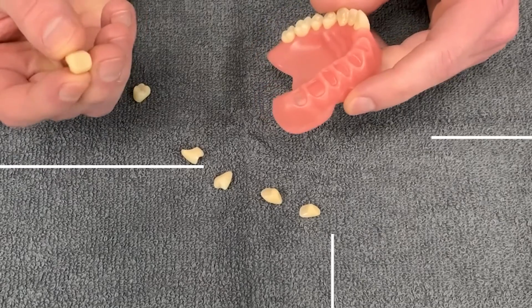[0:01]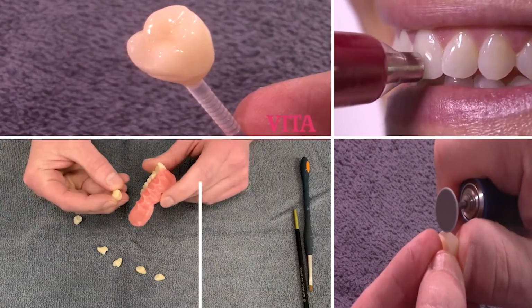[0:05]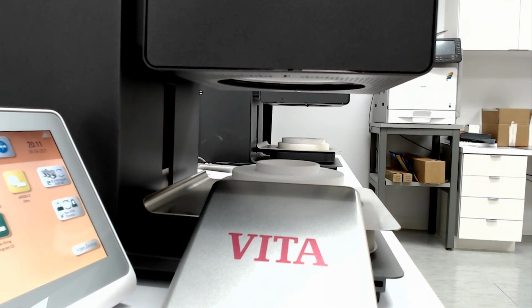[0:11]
Today we're going to be talking about calibrating the Zyrcomat sintering furnace. Now this is for the VITA ZYRCOMAT 6000 MS or the VITA ZYRCOMAT 6100 MS.
I get phone calls from time to time of people asking me, hey, Paul, my unit is getting a little older. I want to check out, make sure that the calibration is okay. Or, hey, Paul, I came in today and I ran a cycle and my crown just doesn't look quite right. How do I check the temperature on my furnace?
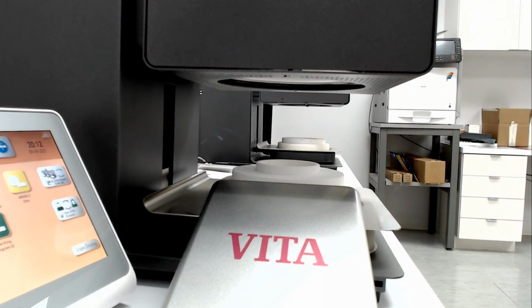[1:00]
For the Zyrcomat sintering furnaces, the only way to check the temperature and to calibrate it is to use our VITA Calibration Kit and run a zirconia sintering ring.
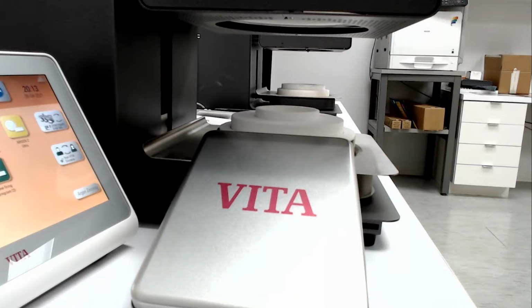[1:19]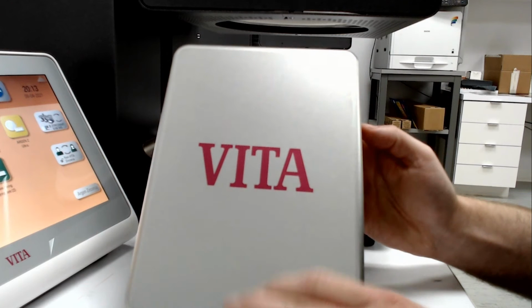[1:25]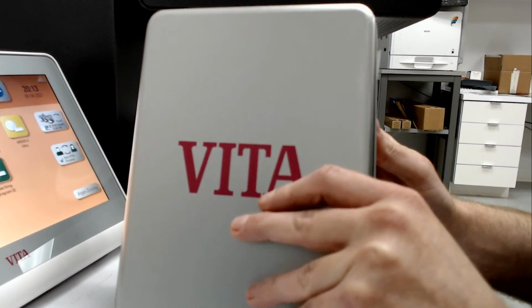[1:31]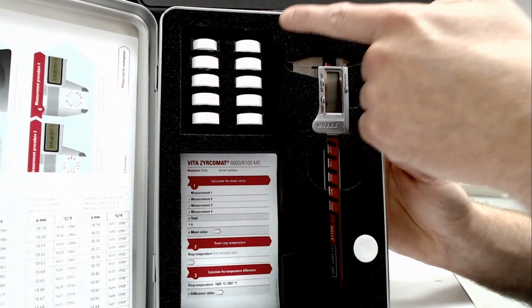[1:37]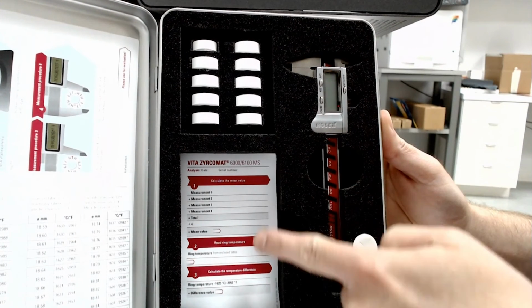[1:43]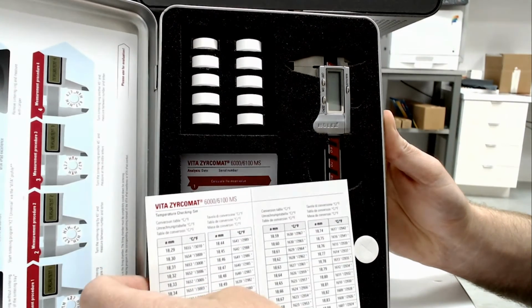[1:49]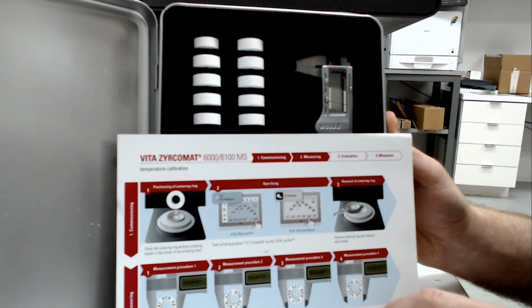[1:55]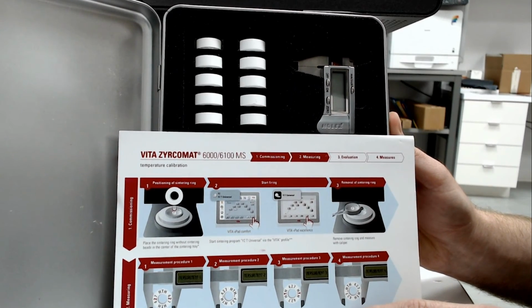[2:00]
This is what the Calibration Kit looks like. It comes in this nice silver box, and included in this box is the paperwork, the directions. It comes with 10 sintering rings. It comes with a digital caliper, a sheet to track your measurements, a temperature chart, and instructions on how to calibrate your furnace. I'm going to walk you through this to show you what it looks like.
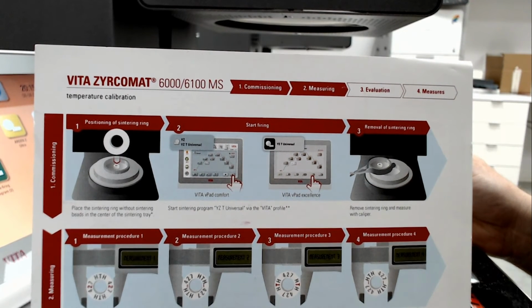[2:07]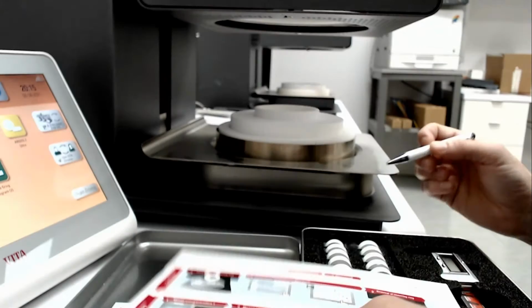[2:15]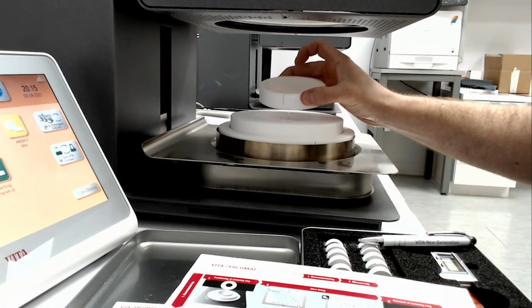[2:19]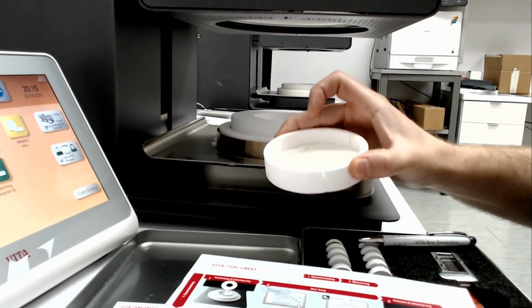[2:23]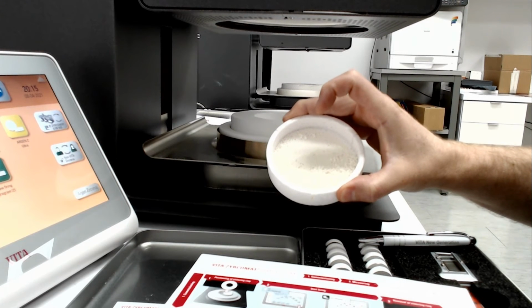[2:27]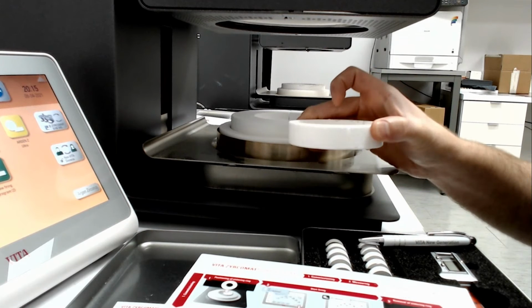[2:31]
Okay, to start, we want to put a single one of those calibration rings in the center of our tray, but without the beads in it. So let me show you what that looks like. Typically, in our crucible here, we would have the zirconia beads. Now, we don't want to throw these away. We just want to transfer them out of here into another container.
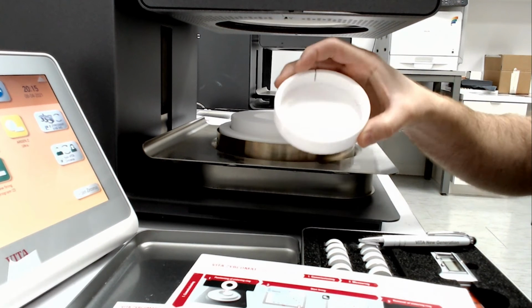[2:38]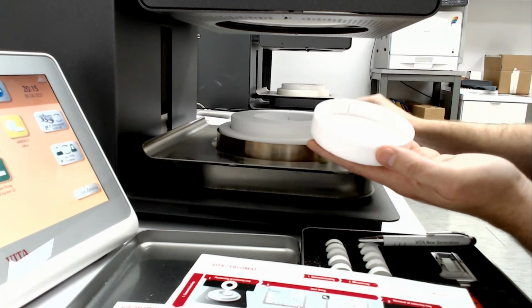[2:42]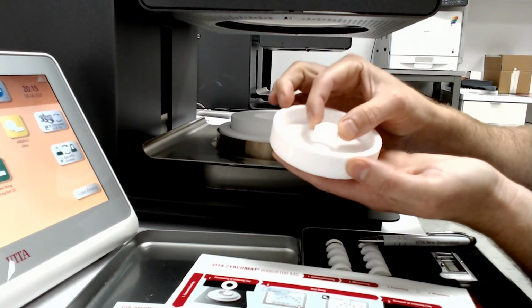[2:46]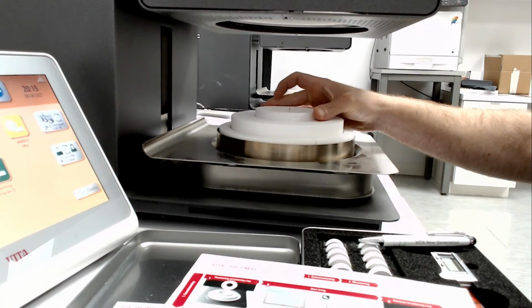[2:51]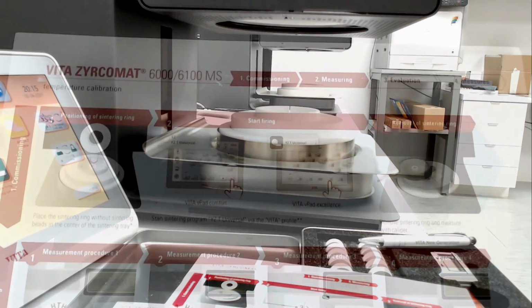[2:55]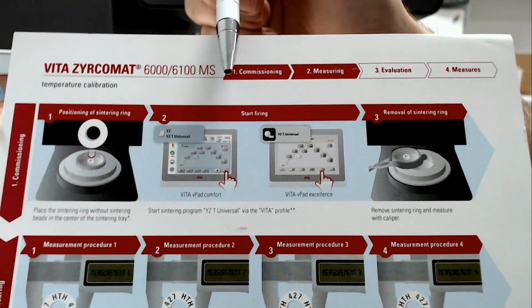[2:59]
I happen to have another container without the beads in it. So I want to place a single ring in the center and put it into my sintering unit. The second step is to start firing.
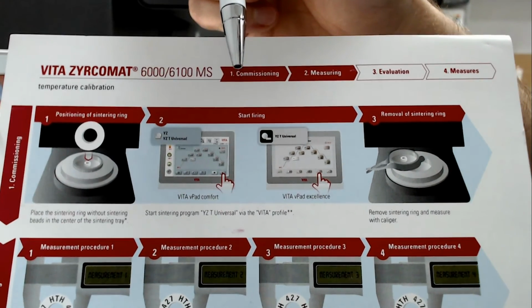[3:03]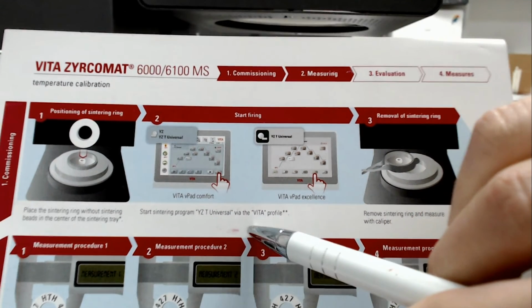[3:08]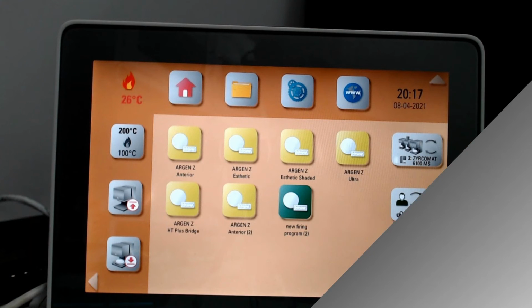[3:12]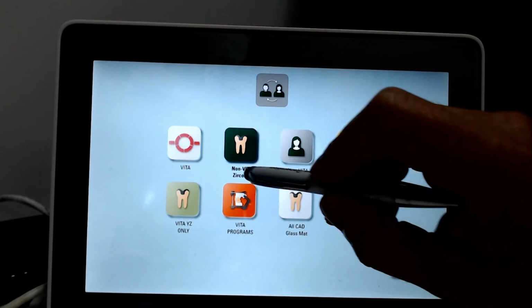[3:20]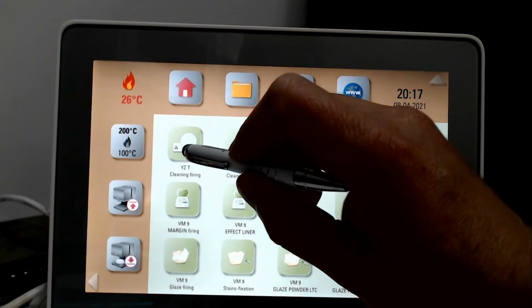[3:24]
And the firing program we want to use is the YZT Universal. So let me show you how to find that on your V-pad. On your V-pad, the first thing you want to do is change the user profile here to the VITA profile.
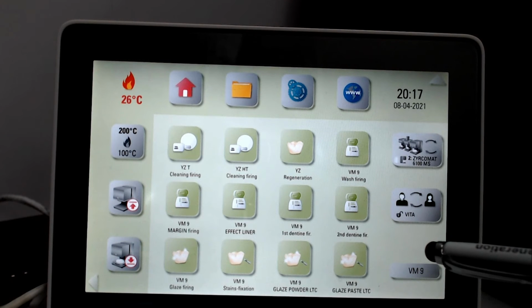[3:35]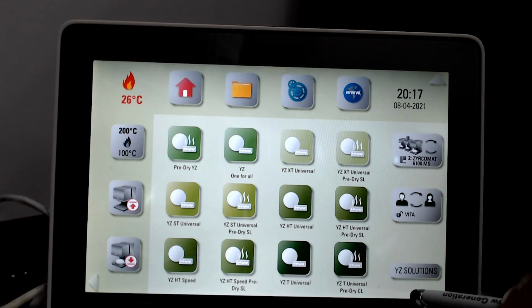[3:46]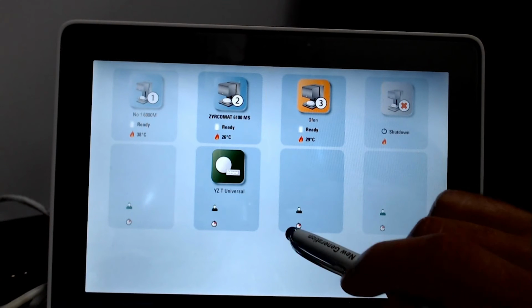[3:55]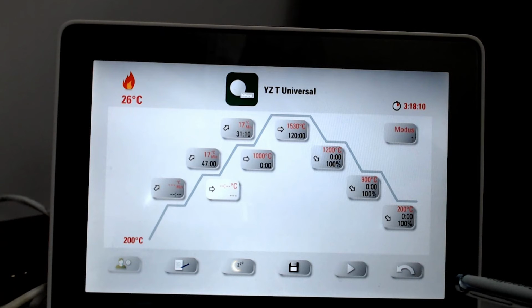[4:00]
Now on the home page for the VITA profile, we want to find our sintering programs. And the quickest way to do that is to go down here, tap this, and then we can scroll up until we find our YZ solutions. Under YZ solutions, we're going to find our YZT Universal. And this is the program that we're going to use to calibrate or run that sintering ring. Now you can see it's about a 3-hour cycle plus cool down, so make sure that you give yourself enough time.
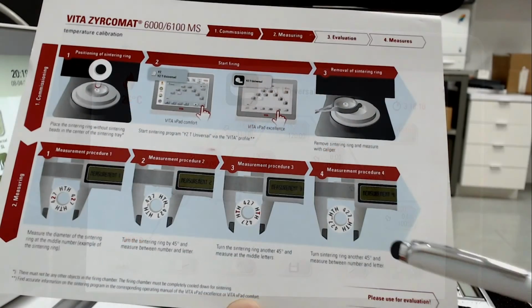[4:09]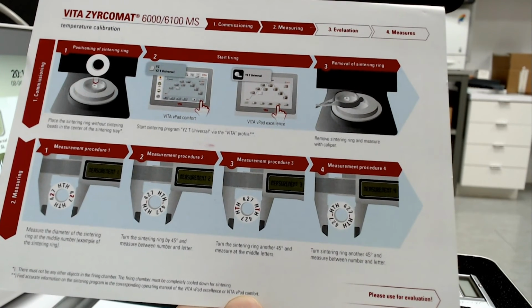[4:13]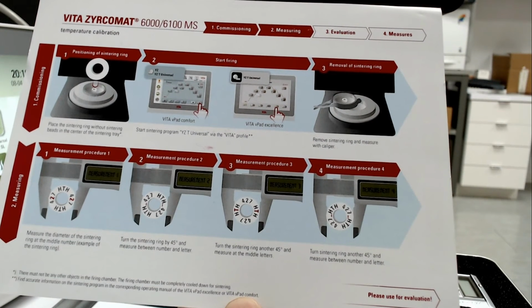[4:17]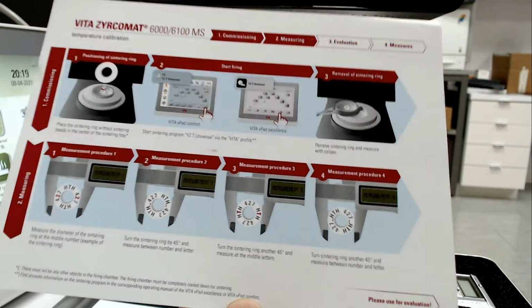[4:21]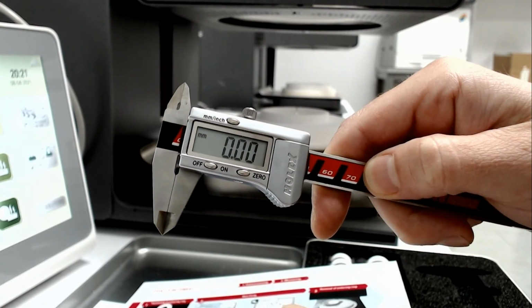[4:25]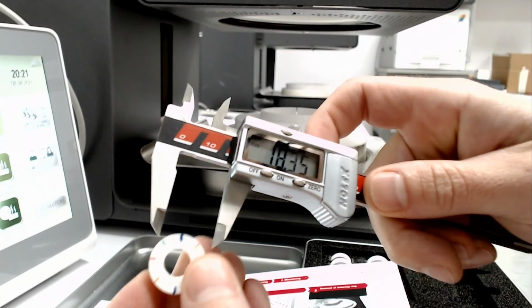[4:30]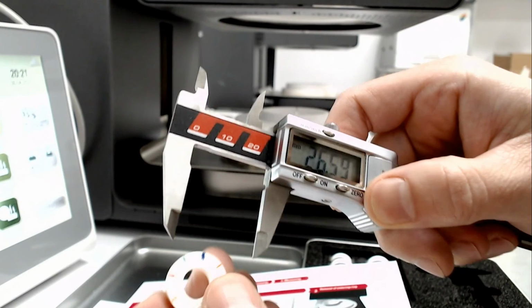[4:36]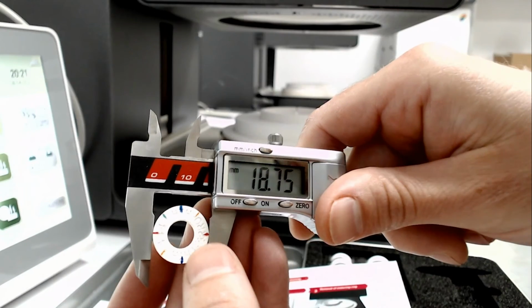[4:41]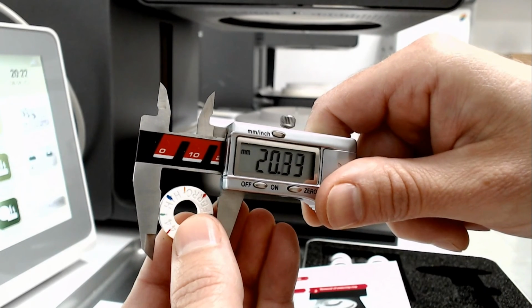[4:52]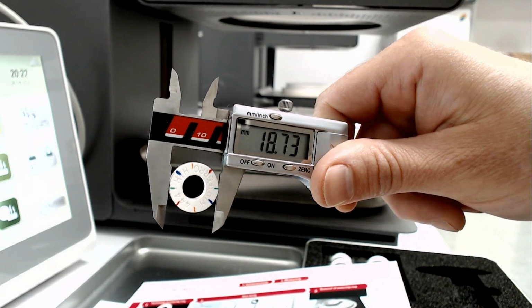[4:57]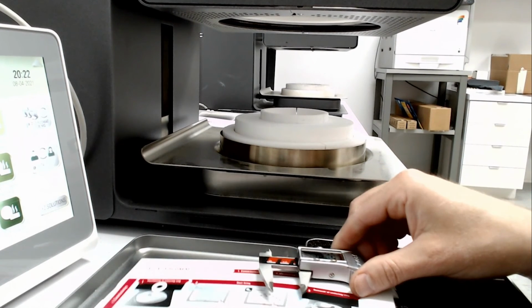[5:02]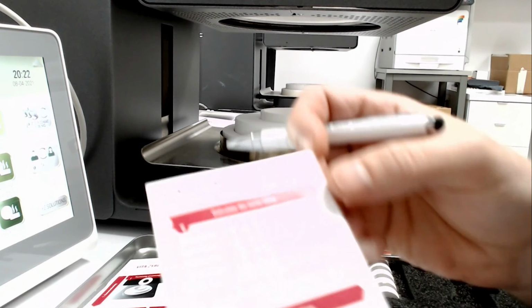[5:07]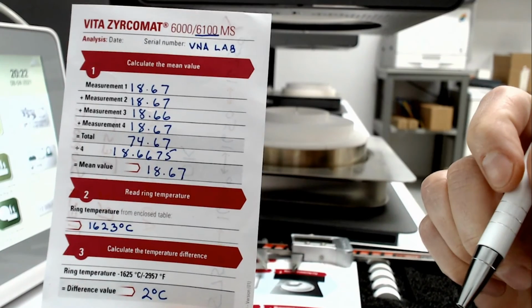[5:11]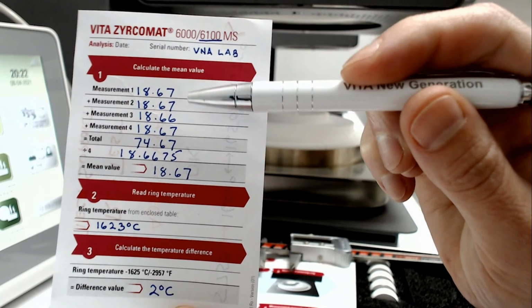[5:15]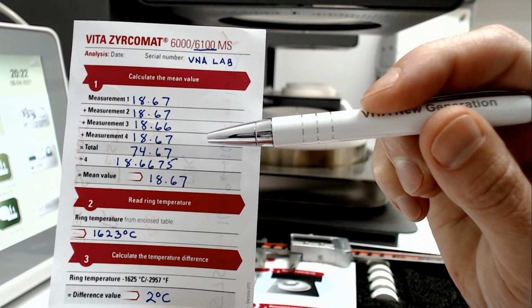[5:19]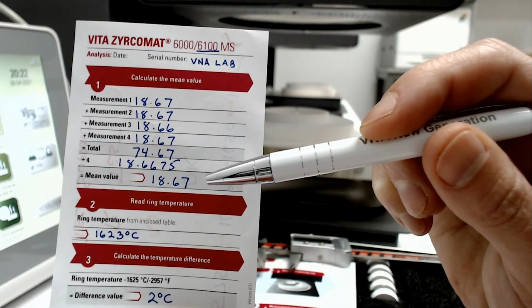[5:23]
And I'm going to keep recording until I have my 4 measurements. The kit comes with forms that you can use to record your measurements. And in the end, we're going to take an average. So we're going to total them, divide it by 4, and get our mean value.
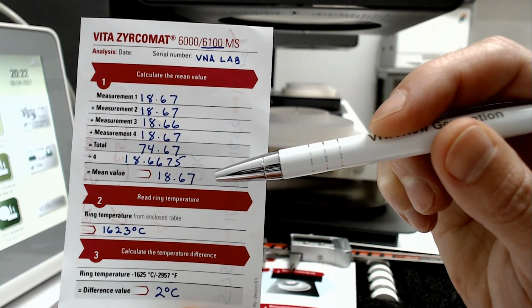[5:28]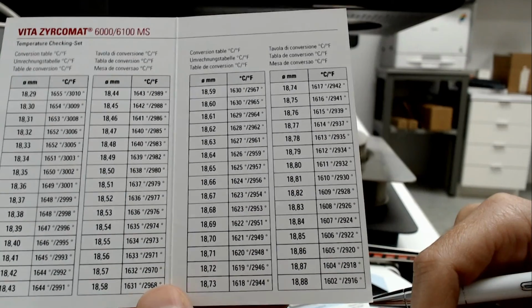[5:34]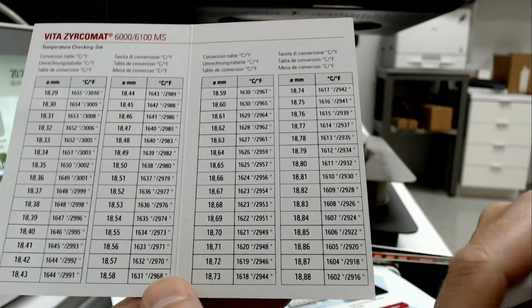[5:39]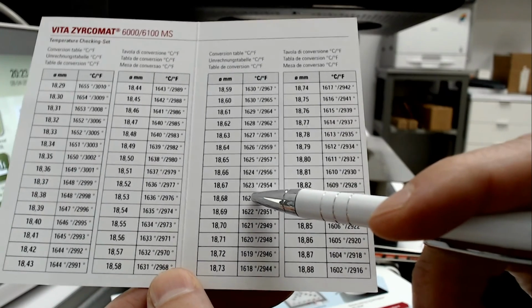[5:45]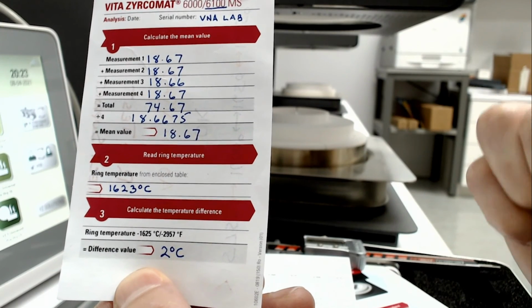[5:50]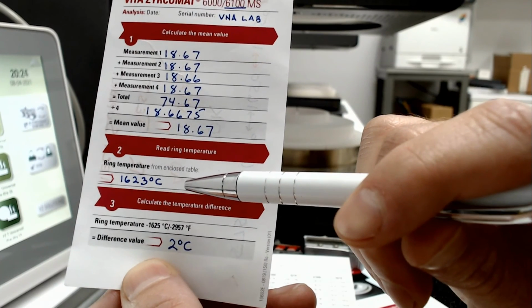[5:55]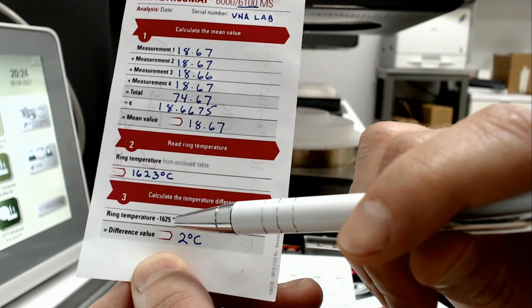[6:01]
Once we have our mean value, we're going to use this to reference our temperature chart. And here is our temperature chart. Our average value was 18.67. So 18.67 gives us a temperature of 1623. Back to our log sheet here, the temperature from the table was 1623, and we're going to subtract that from the value 1625, which leaves us a difference of 2 degrees.
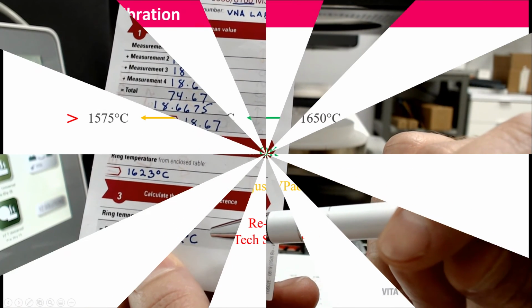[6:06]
I've created a cheat sheet here to tell you what to do with that value. Now, the value we're comparing it to is 1625, and we have a window of plus or minus 25 degrees. So anything from 1600 to 1650 falls within the window of it being okay. If it falls within that, you don't need to make any adjustments. Your temperature is testing within proper values.
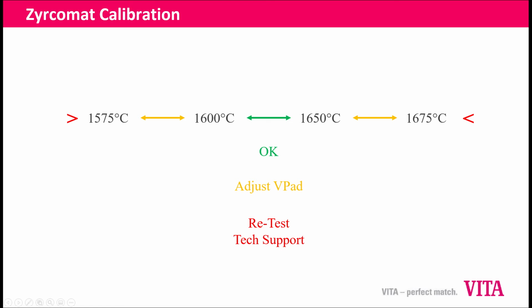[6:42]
Now, if it's outside of that, so if it's more than 25 degrees either side, if it's between 50 degrees on either side, then you can adjust the VPAD. So on the low side, 1575 to 1600, or on the higher side, anywhere from 1650 to 1675, we can adjust and compensate for that difference in the VPAD itself. And I'll show you how to do that in just a moment.
If we get outside of those values, so lower than 1575 or higher than 1675, okay, that is outside of the range that we can compensate for and usually indicates that there's something more going on. So at that point, we usually recommend that you either retest it or contact tech support so that we can help you troubleshoot.
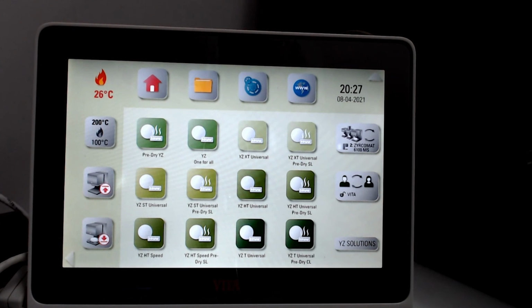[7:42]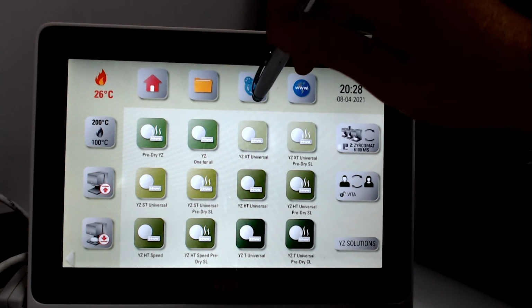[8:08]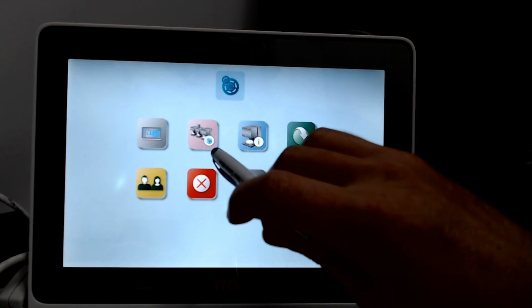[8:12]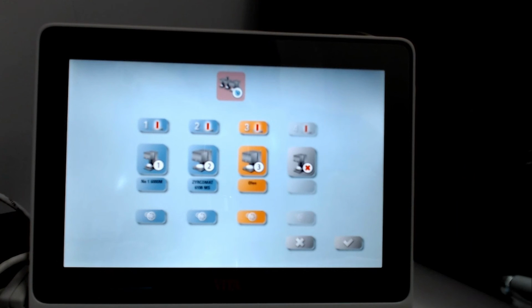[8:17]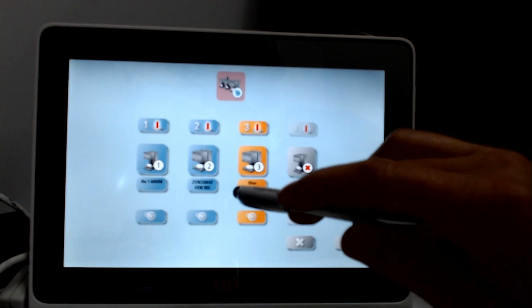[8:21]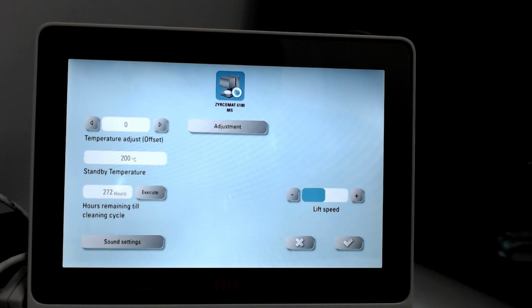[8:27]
Now, if you find yourself with a value that is outside of the okay range and in the range that needs to be adjusted, the yellow range, you can compensate or adjust that on your VPAD. The first thing you're going to want to do is go here to the gears or the settings page. We're going to find the one that has the multiple furnaces here. We are going to find the furnace in question. For me, it's the Zyrcomat 6100. I'm going to press the gears or settings underneath it.
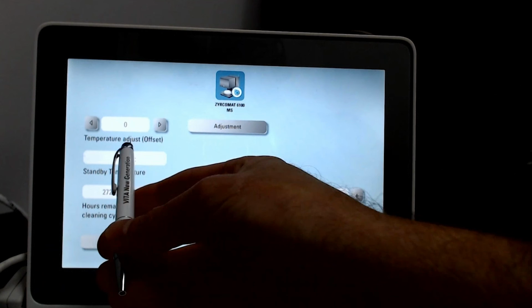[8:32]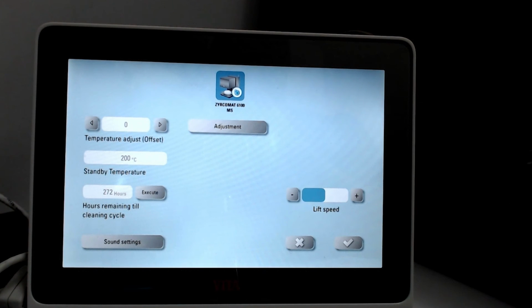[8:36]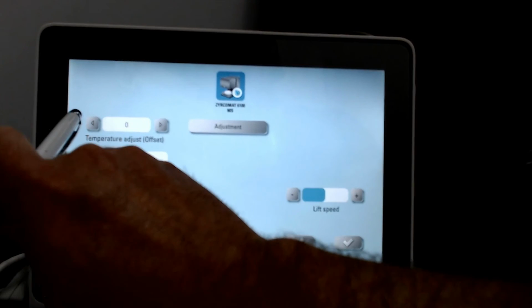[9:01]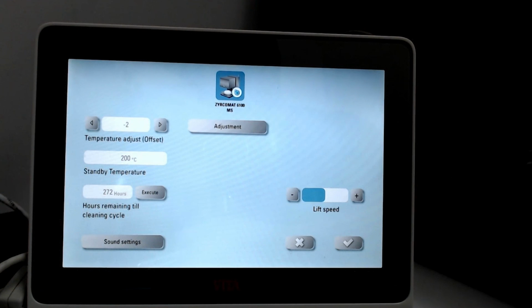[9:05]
And it gives me this option here for temperature adjust offset. Now, here is an important note that we are not going to compensate for the temperature difference with that temperature offset. We are only going to tell the VPAD what that difference value is, and then it will compensate. So what I mean by that is, in my example, I was 2 degrees too cold. I am going to set this to minus 2 degrees, okay? Because it was 2 degrees too cold. I know that sounds counterintuitive, but that's how this functions.
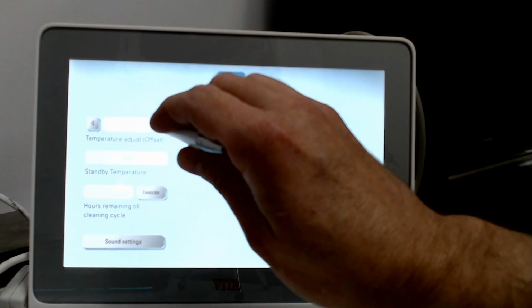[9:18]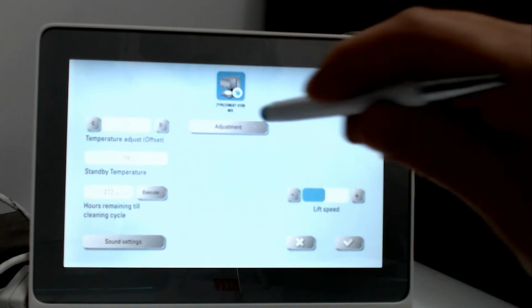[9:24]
Now, if it was running 10 degrees too hot, I would set this to 10, and it will automatically make the adjustment and recalibrate our temperature.
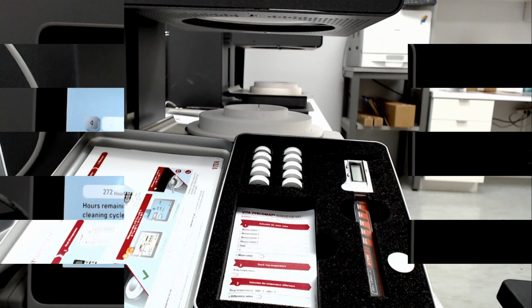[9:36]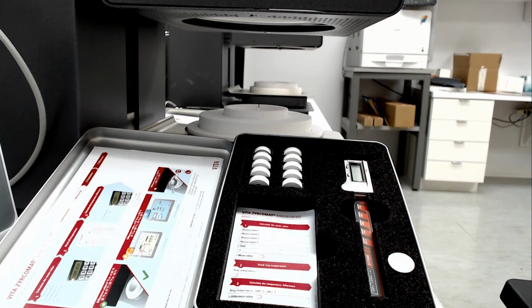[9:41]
Now, the kit comes with 10 rings, and I recommend that you run one of these during your annual maintenance so that you can track the progress of your furnace, or if you're a new furnace owner, that you actually run one of these rings at the very start so that you have a reference and you can track the progress of your furnace and the heating elements. You can also buy replacement rings. So if you buy the kit and you need more rings, you can buy the rings just by themselves. That is available also.
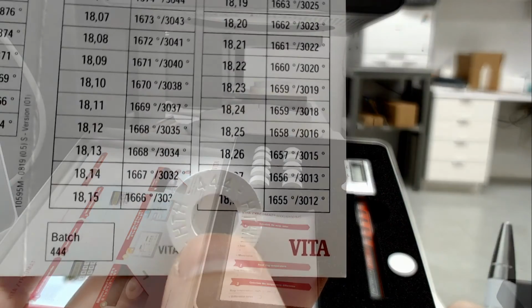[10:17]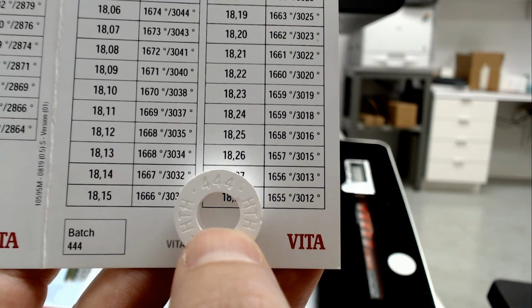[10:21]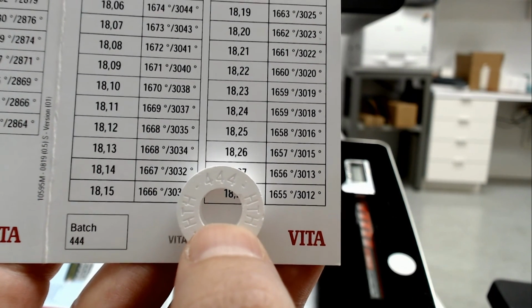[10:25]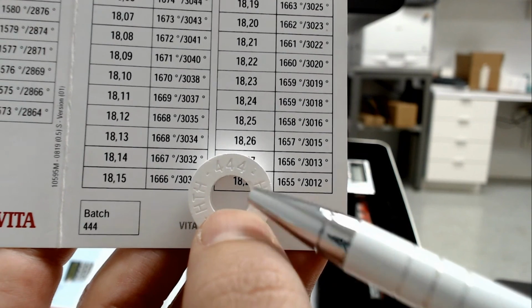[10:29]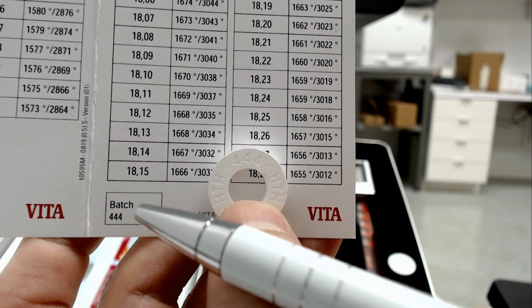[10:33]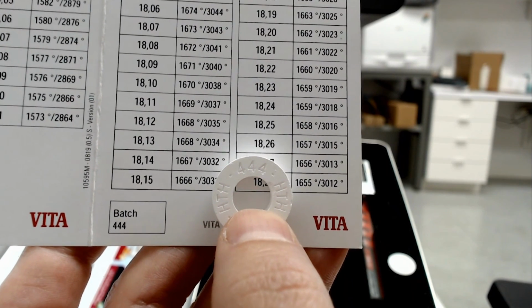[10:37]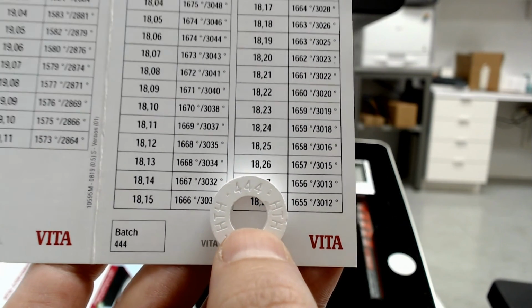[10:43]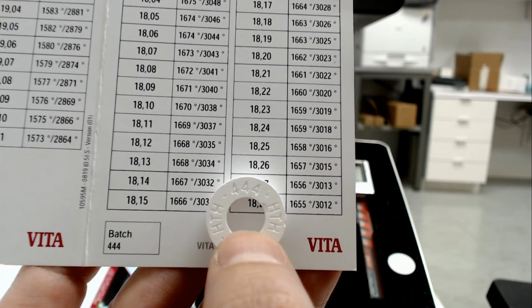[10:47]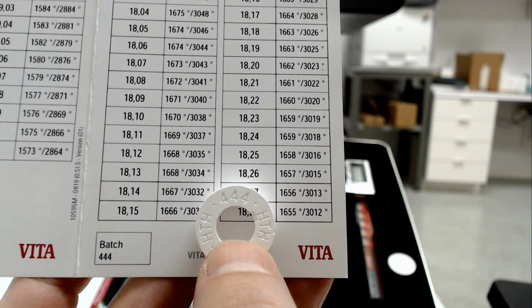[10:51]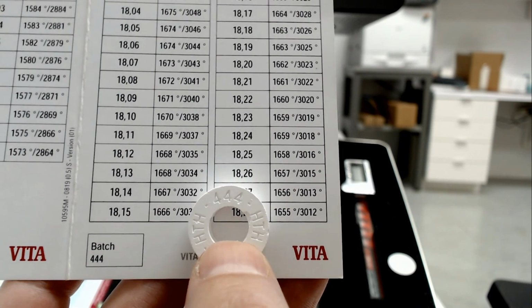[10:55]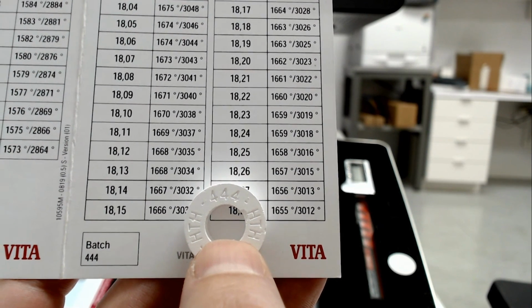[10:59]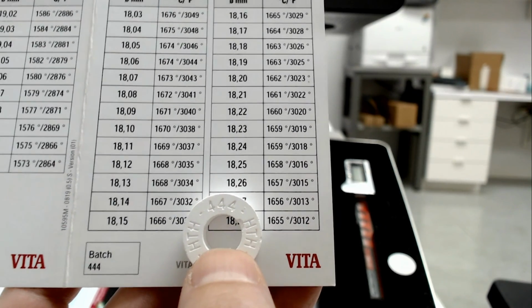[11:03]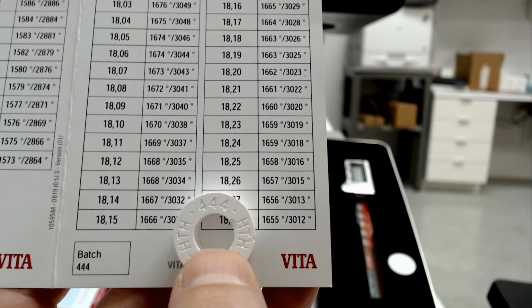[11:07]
Another important note is that when you're using this calibration kit, you want to make sure that the number on the calibration ring matches the number on the temperature chart. Just like zirconia you're used to using in the lab every day, each batch of zirconia has a slightly different shrinkage value, and that's why you must pair them with the appropriate temperature chart. Also, rings from other manufacturers are not compatible in the VITA furnace and vice versa. They're specific to the company that they're made for and the furnace that they are meant to check the calibration on and are not interchangeable.